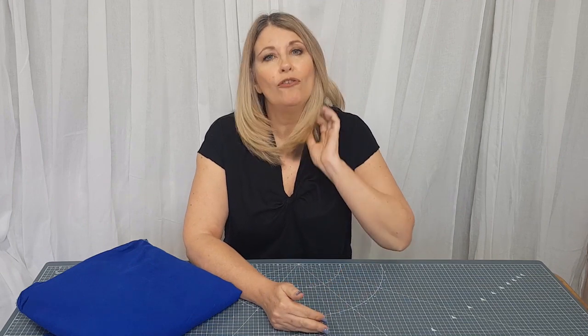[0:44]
Today I want to talk to you about making scrubs. At the moment there's lots of things we can do to help the NHS, but as sewers we can help by making scrubs. There are lots of Facebook groups out there that you can join to find out who your local coordinator is for your local hospital, and then you can find out what they need, or you can maybe ask for GP surgery.
I thought it'd be a nice idea, we're making for local midwives and GP surgeries, and I thought it'd be a good idea to run through the process and show you what we're doing, and give you some tips along the way. So the first thing you need to do is get your fabric, and you can use cotton or polycotton fabric. The main thing is that it can be washed at 60 degrees, a nice high temperature, and most of the colours that people are using are blue, but there are lots of other ones that you could use. So again, check with your coordinator to find out what they need.
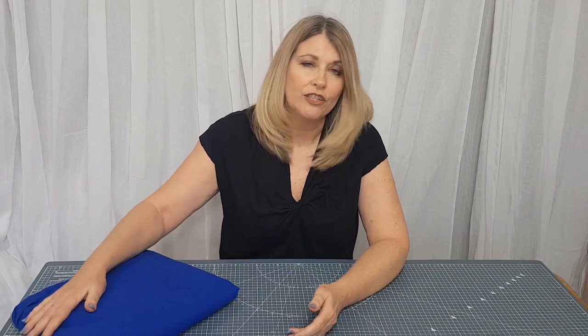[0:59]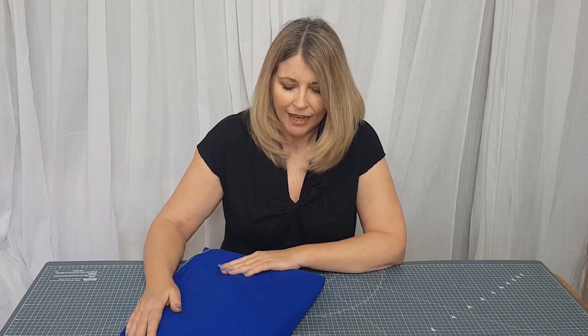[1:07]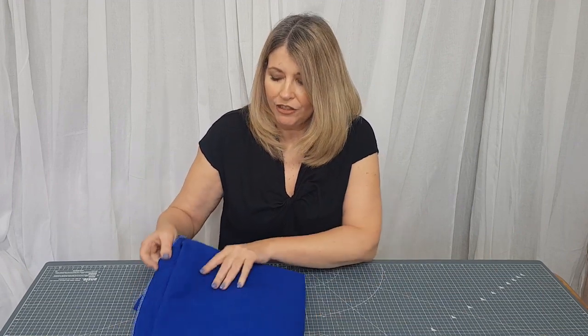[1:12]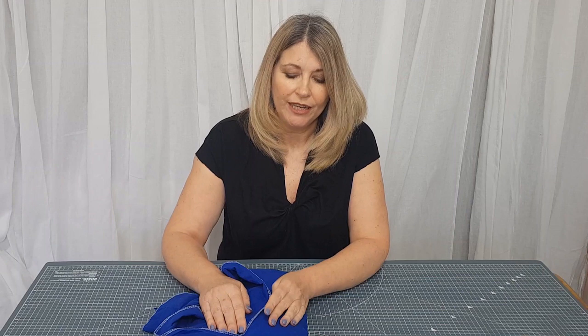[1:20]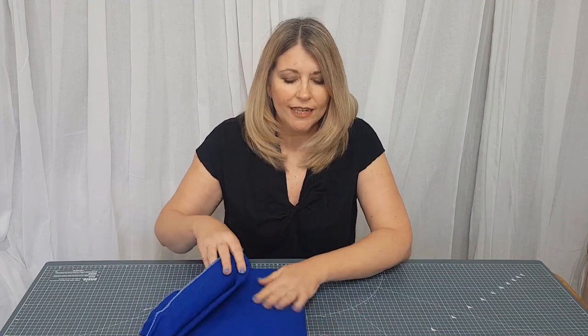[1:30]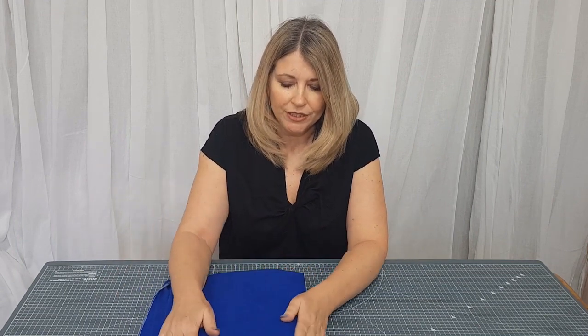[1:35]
This is a 100% cotton. When you get your fabric, wash it at 60 degrees and give it a press, and then it's ready to go. Before you wash it, a couple of things you can do. I like to overlock the raw edges. So it's generally about 3.5 metres of a 150 centimetre wide fabric that you need. So cut it into lengths, it makes it a bit more manageable. Overlock the raw edges, that will stop them coming all unravelled in the washing machine, and press out that centre crease if it's been folded in half, because that will stop it setting. And then you can wash your fabric and it's ready to use.
So that's the fabric. Patterns, there are lots of patterns available as well. You can download them, you can get printed copies. Again, the Facebook pages, a lot of them have got downloadable patterns. So grab yourself a pattern and some fabric and we'll get started.
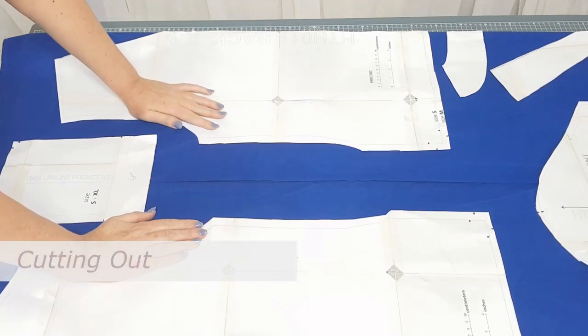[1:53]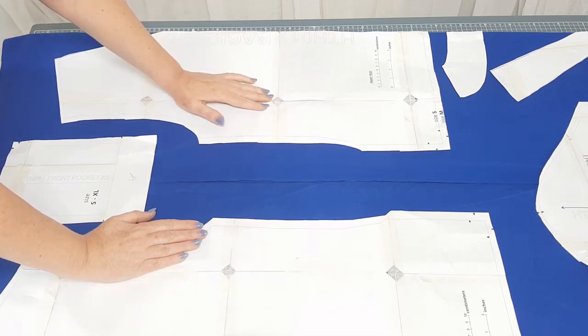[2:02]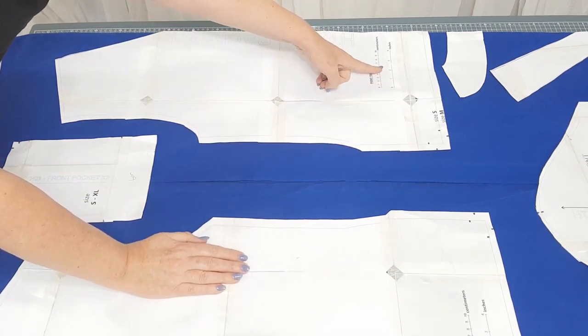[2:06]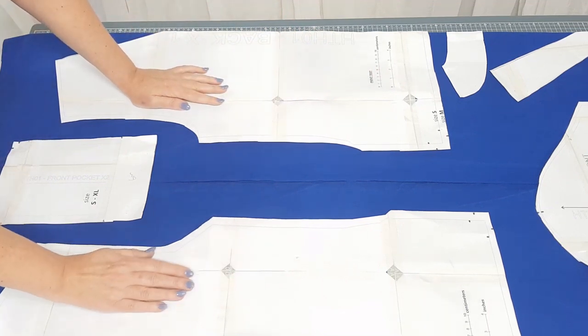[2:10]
So I've got my pattern and fabric prepared. This pattern is the print at home version, so you print it out on A4 and then stick it all together, so it's quite quick to do. If you're doing that at home, do check the scale to make sure you're printing out the right size to the right scale. A couple of things that I've already changed.
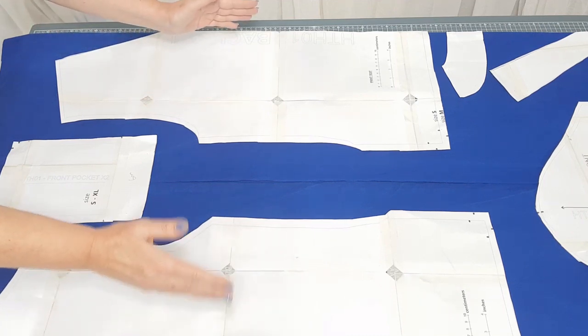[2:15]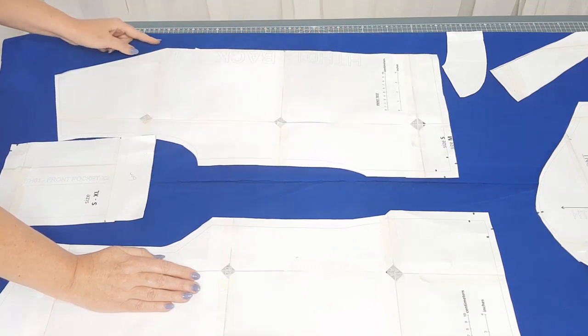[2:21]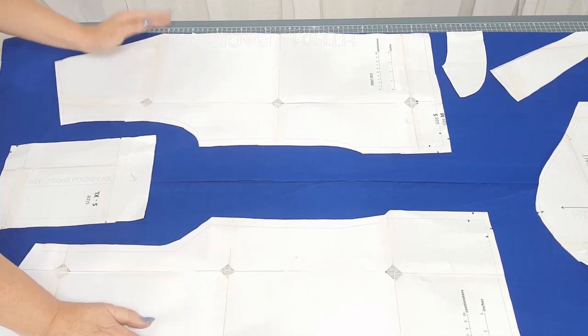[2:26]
When I printed this out, it printed the whole front and the whole back. So the front was one piece and the back was one piece. So I've cut those in half. So I've now got half of the front here. That means I can place this pattern piece to the fold of the fabric, and the same with the back. I can place them to the fold of the fabric.
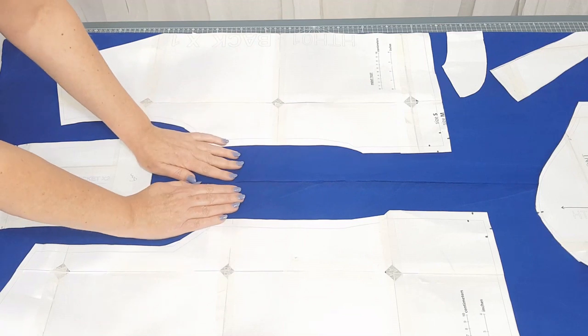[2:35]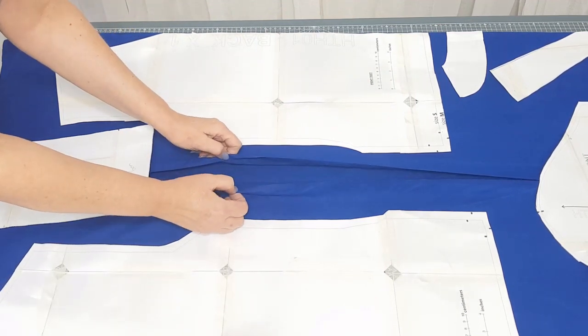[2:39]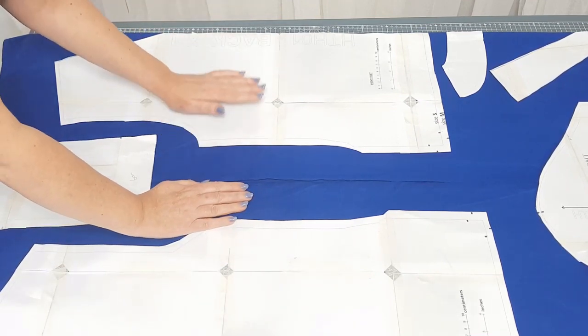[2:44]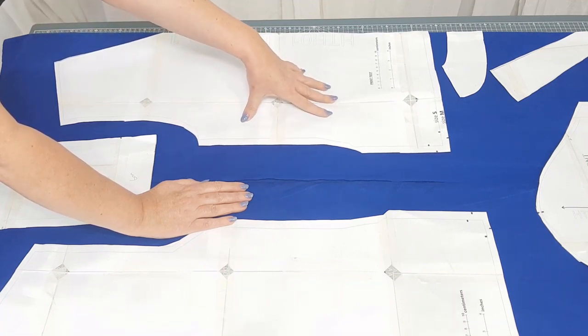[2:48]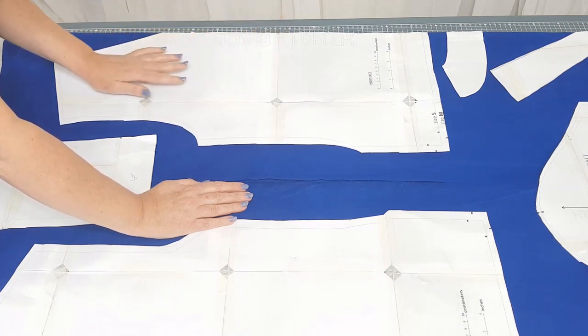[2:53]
And if you're doing a small, medium or large size, that generally means that you can fold the fabric into the middle and get both pieces next to each other. So I've got the selvages of the fabric here and the fabric folded into the middle. It also means that you could do more sizes, because you could have that, this is medium, this side, and the other half that I got I'll do as large. So it just gives you more options. I've also cut the front and back neck facings in half so they can go to the fold as well. I think it's a bit more economical on fabric if you have things placed to fold.
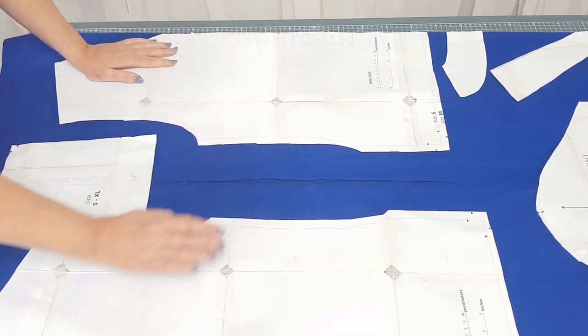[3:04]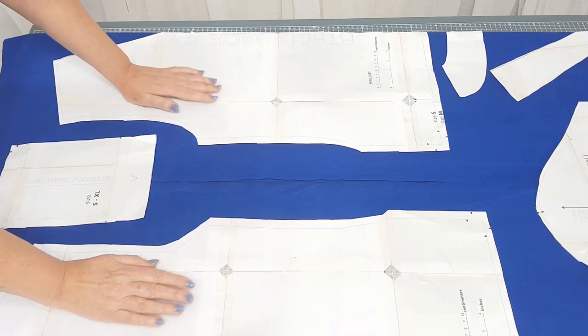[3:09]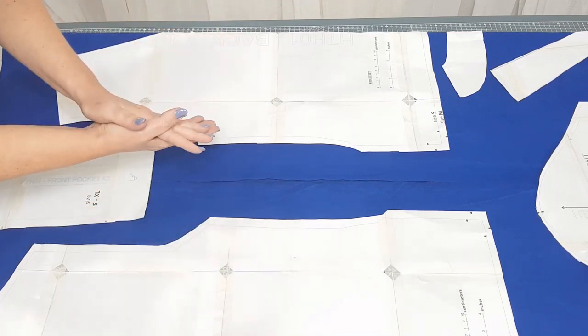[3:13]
If you're doing several pairs, you could think about cutting more than one at once, so layering up your fabric. I've managed to cut 3 pairs at once, so have a go at that if you're confident enough to do that. Do cut more than one pair, it's a little bit quicker as well.
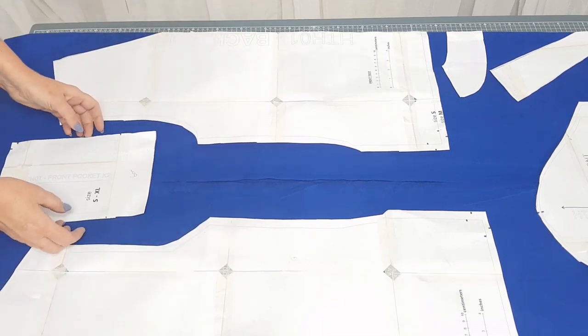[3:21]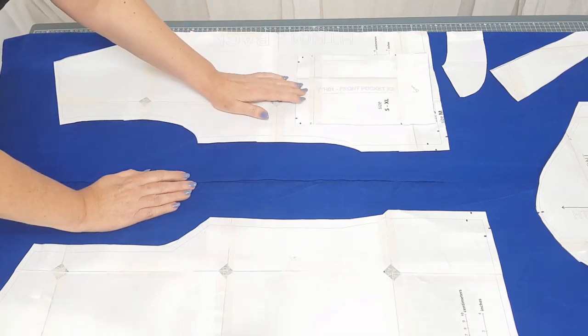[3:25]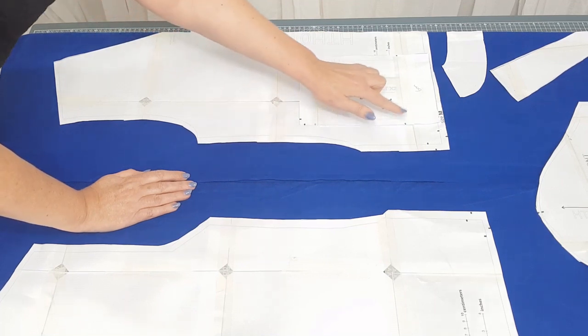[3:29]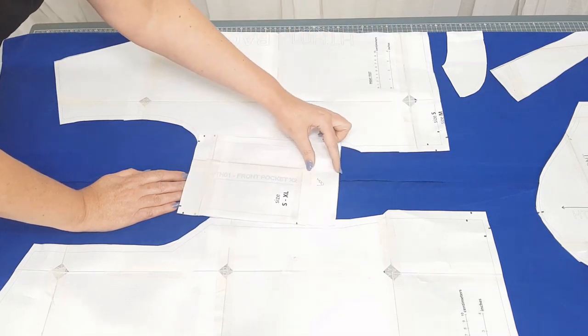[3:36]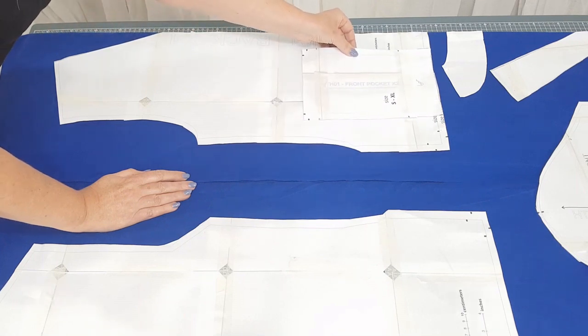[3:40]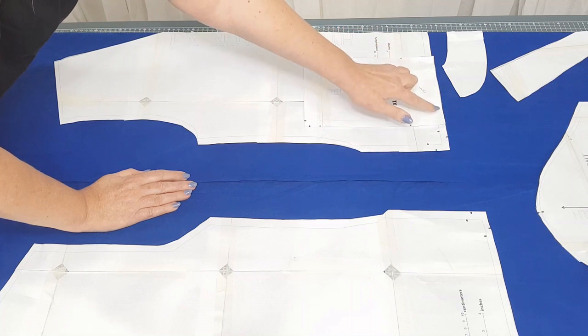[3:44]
Another thing that I have done, the front pocket piece, the front pocket is a patch pocket, and you're supposed to stitch it on around 3 sides. But what I've done is I've lengthened this by 6 centimetres. So I've put an extra 6 centimetres on the bottom here, so that when I place the pattern on, place the fabric on, the bottom of the pocket will be neatened with the bottom of the top, a tunic. So I will show you that when we come to the construction.
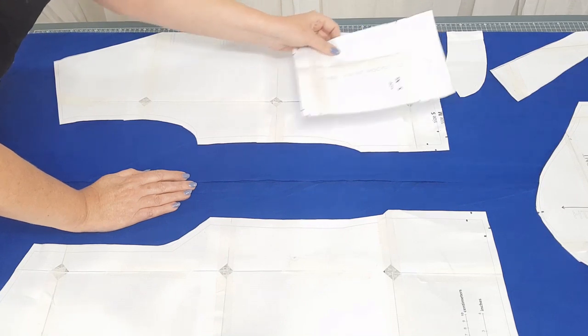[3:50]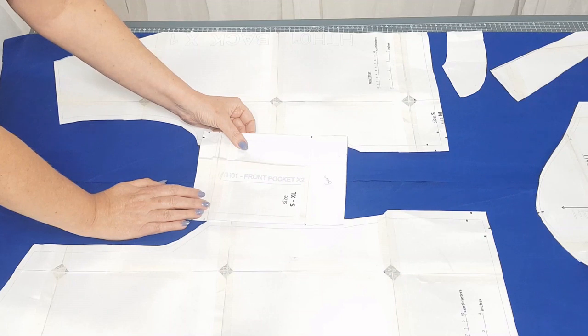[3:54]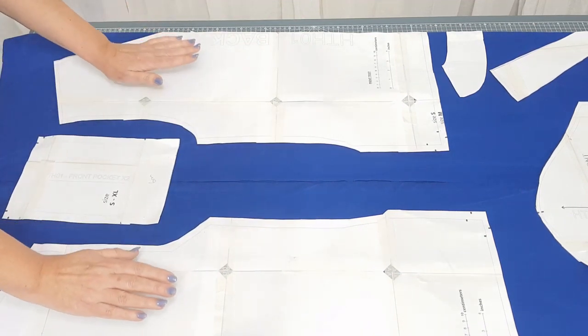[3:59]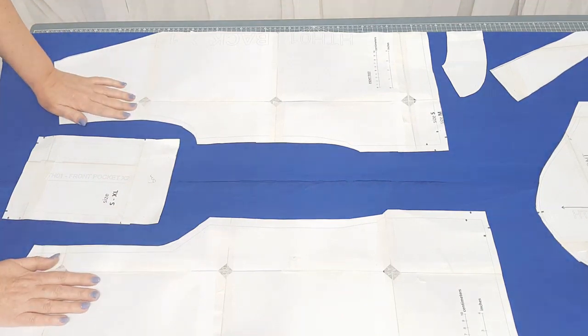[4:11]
I'll show you that, but add an extra 6 centimetres onto the bottom of your pocket piece, and that should save a bit of time later on. So I've got my pattern pieces on the fabric here, and the front and back facing, and then I'll do the sleeve after I've cut these bits out. So that's the next thing to do, will be to cut out all your pieces and then come back to me. I'll show you the next step.
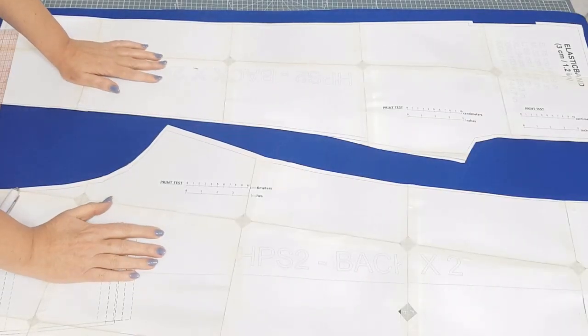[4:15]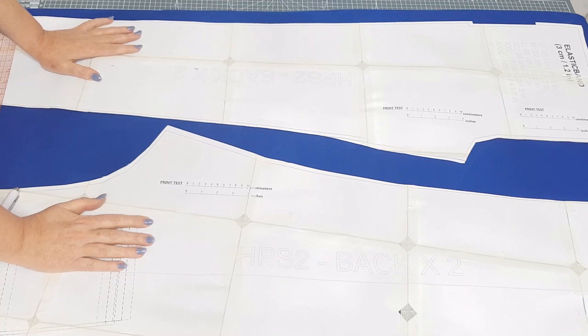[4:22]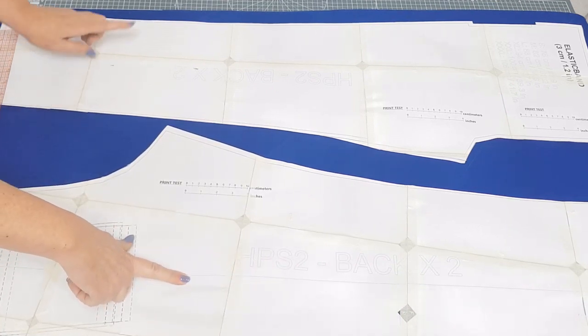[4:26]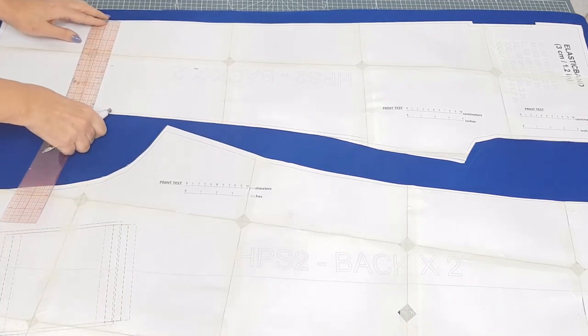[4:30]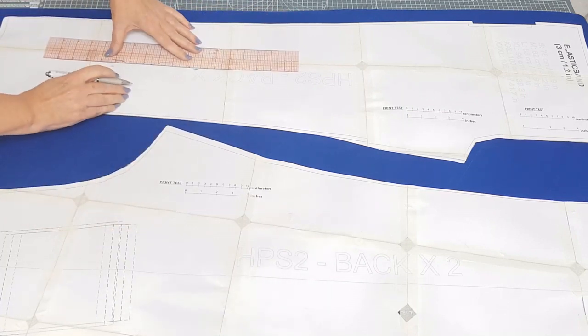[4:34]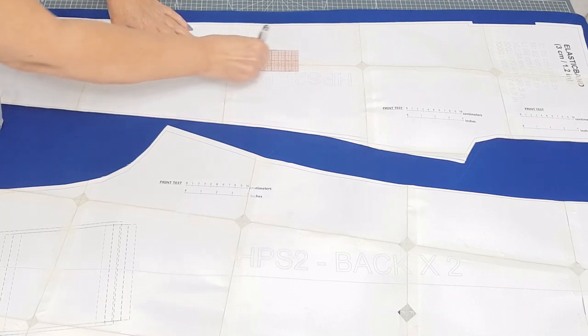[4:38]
Okay, so I thought I'd show you the cutting out of the trousers at this point as well. So here's my trouser pattern. Again, it was the download pattern that I've stuck together. A couple of things to say about this. There's a grain line on the front here, but there's no grain line on the back. So I've just marked the centre of the leg in 2 places and then drawn my grain line here. So this will be my grain line here.
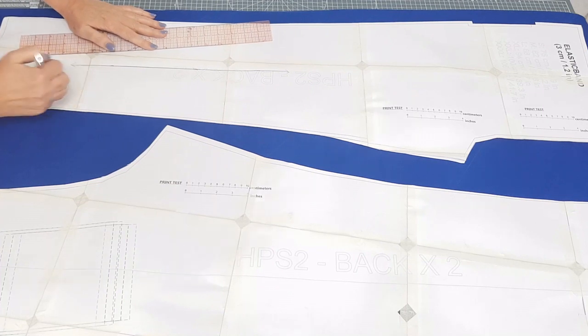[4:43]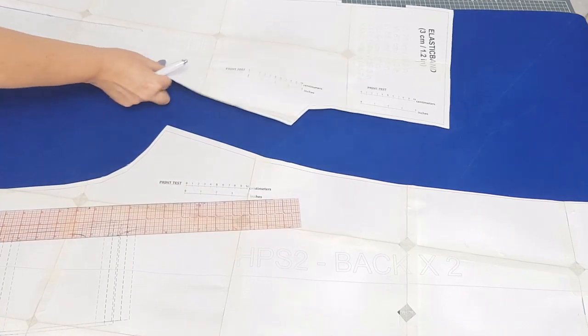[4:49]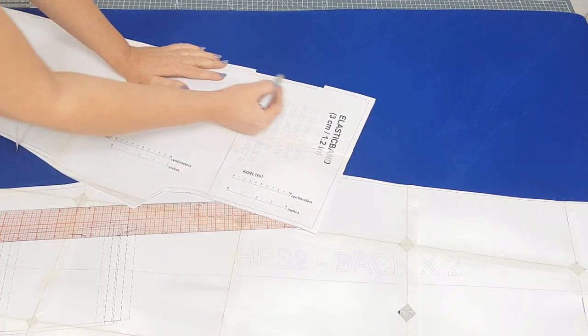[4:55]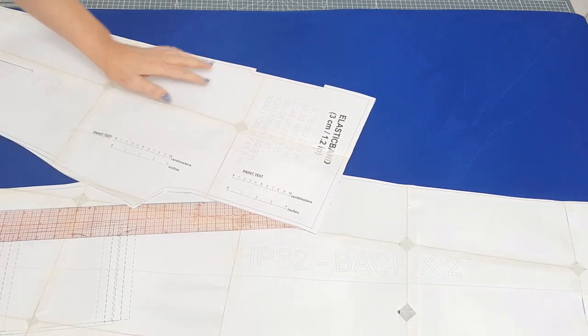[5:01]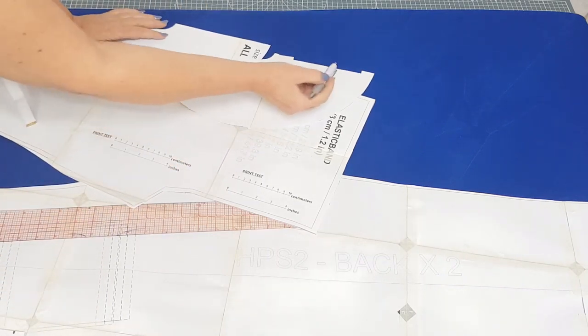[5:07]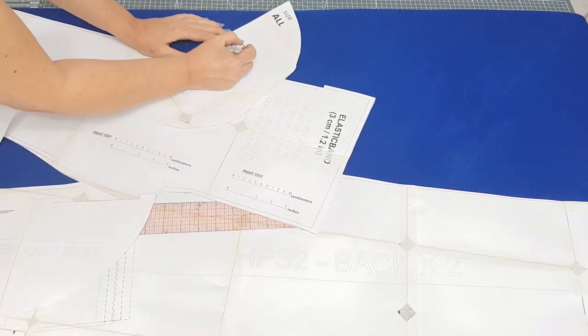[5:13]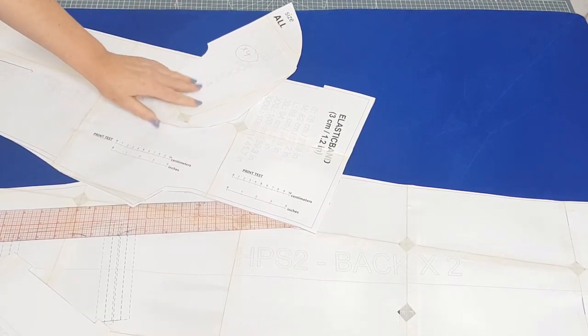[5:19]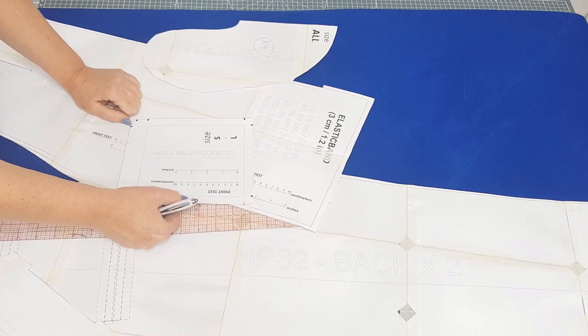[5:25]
Okay, the other thing is with this one, I'm just going to pull this forward so I can point it out. There's a little cutout here. I would ignore this. It's a nice pocket, but for speed wise it's a bit more fiddly, so I would just cut this straight out here. And you'll also see this particular pattern has both pocket pieces, one of them's got a cutout and one of them hasn't. Don't use this one. Just cut out 4 of this one. Okay, so ignore that one and just cut 4 of this one. So you can do inseam pockets with that piece, and then we've also got a patch pocket to go on the back as well.
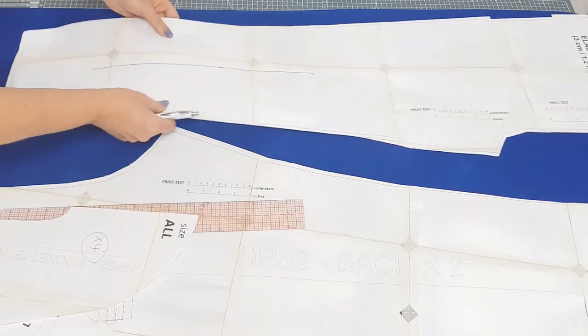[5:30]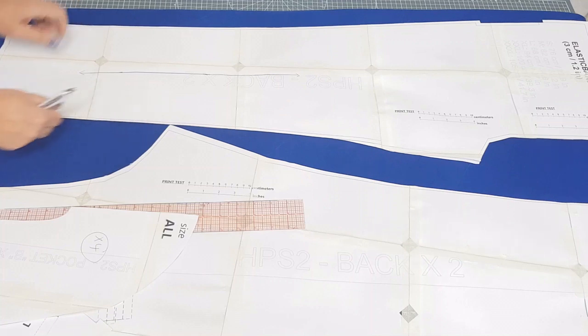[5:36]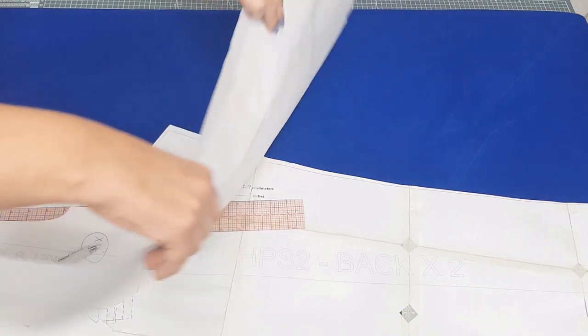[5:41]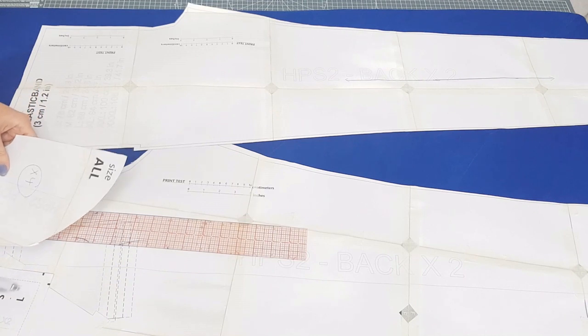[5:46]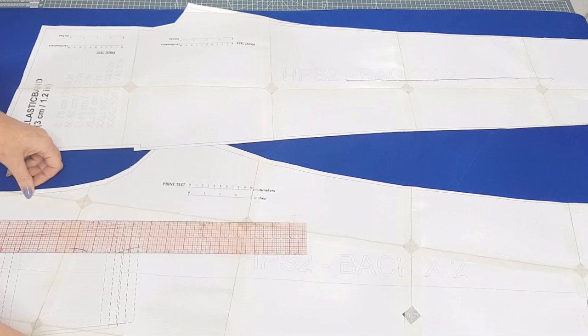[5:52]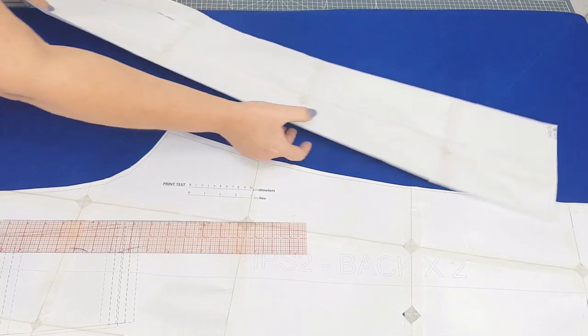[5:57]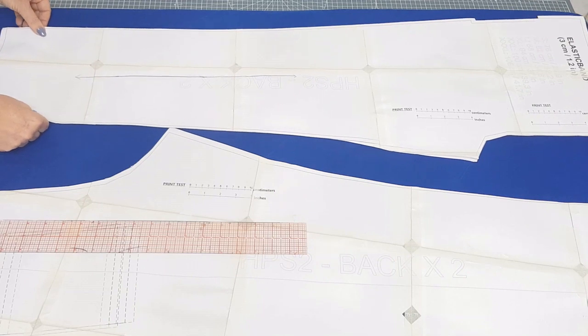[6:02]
So I've placed my pattern piece on the fabric like this. This is the best use of the fabric. Now, generally, when I'm teaching dressmaking, I would say to have your pattern pieces directional, which would mean you would have both of them this way round. But you can see straight away that that's not the most economic use of the fabric. And because we're making uniforms, but also we're using a fabric that has no direction to it, I think in this case we can forego that, one of my very important dressmaking rules, and turn the pattern round and have it like that, just to be more economical with the fabric.
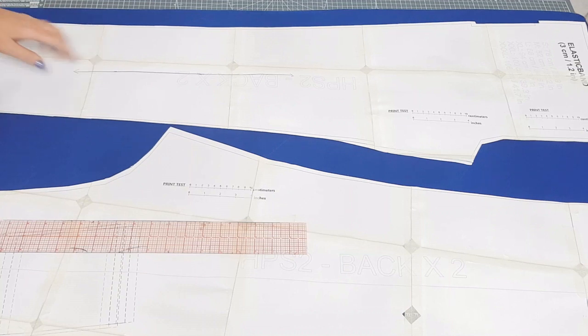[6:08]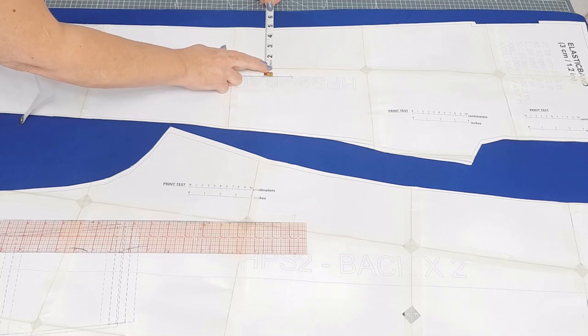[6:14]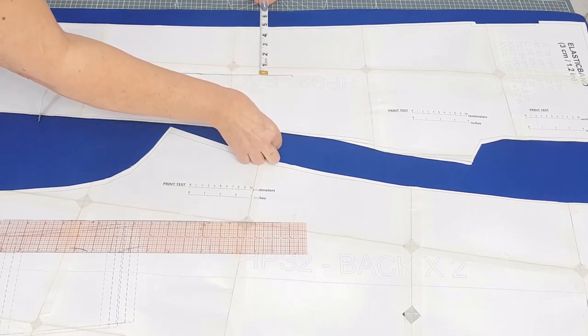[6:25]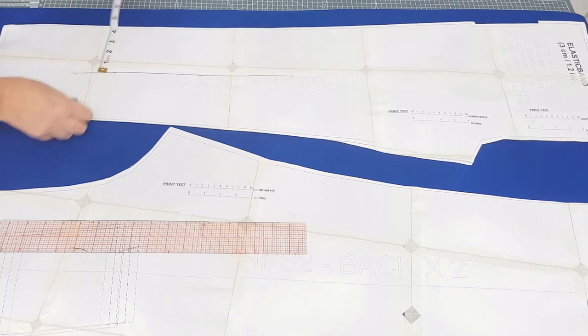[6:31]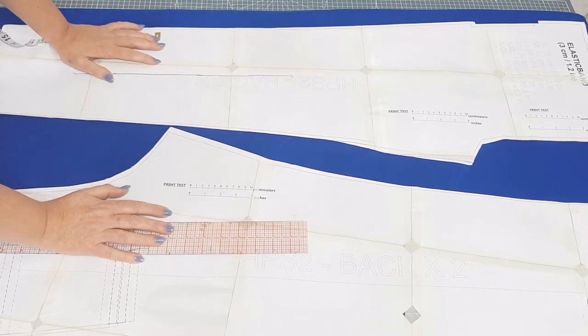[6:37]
So you can pin your pattern pieces on, making sure that the grain line is parallel to the edge of the fabric, either the fold or the selvage. This time the fabric's folded in half rather than to the middle. So check that the pattern piece is exactly parallel to the edge. We don't want our trousers twisting, so make sure they're straight, and then pin your pattern pieces on and cut those out as well. Just a quick mention that the patterns that I'm using are unisex patterns, so they tend to be quite long, so you may want to check the leg length on them as well. So that's it. Cut out your trousers as well, then we'll come back and start the construction on the top first of all.
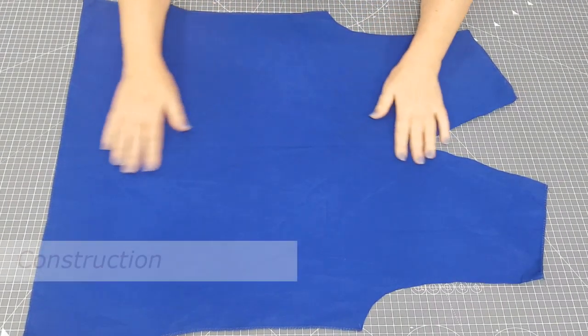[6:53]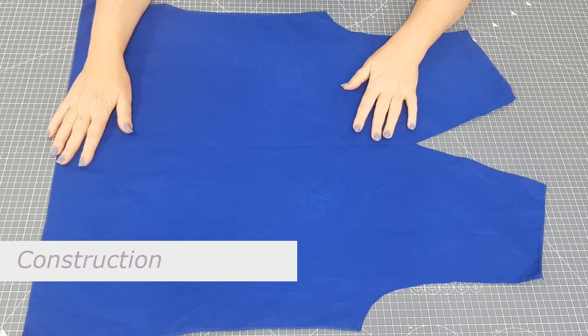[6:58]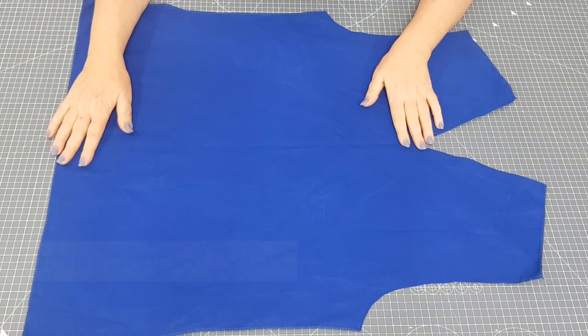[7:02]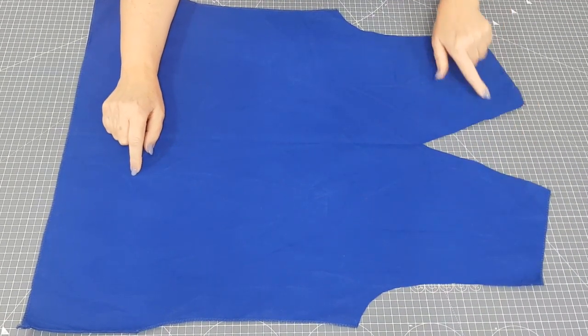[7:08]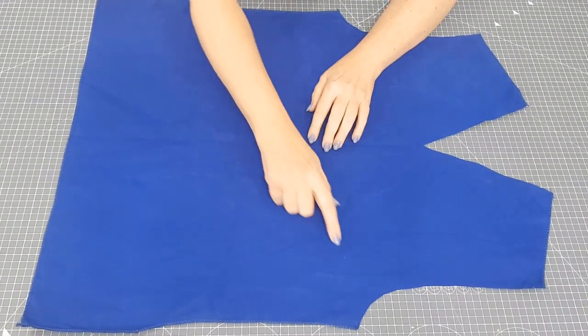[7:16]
So once you're all cut out, the next part of the construction is to overlock some of the edges, or neaten some of the edges. If you haven't got an overlocker, you can zigzag them. And to start off with, I'm going to go through each piece and tell you where you need to overlock. So I would neaten the top shoulder pieces here, and then down the sides and across the bottom on each piece. If you want to, you can just go down each side and come off and start again.
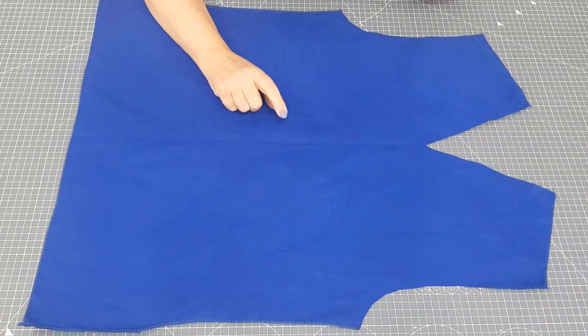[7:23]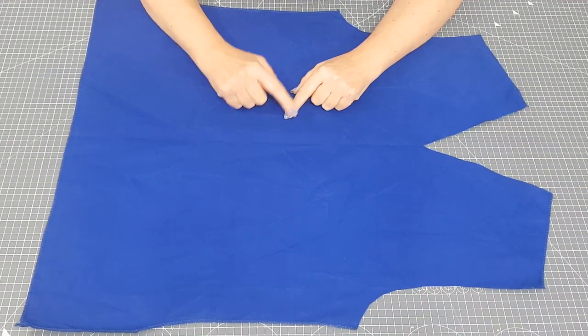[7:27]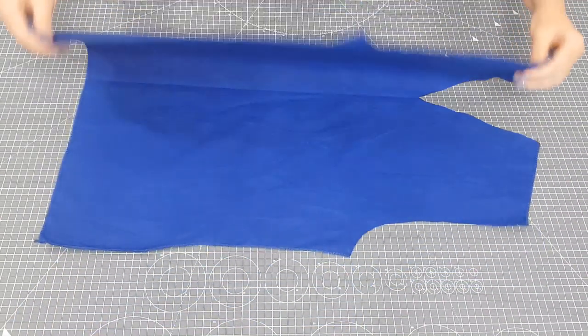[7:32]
If you'd like to learn how to turn corners with an overlocker, there's a video for doing that, for turning curves and corners, on my YouTube channel, and you can just click the link in the top corner and that will show you how to do that. So that's the front. On the back, let me show you the back.
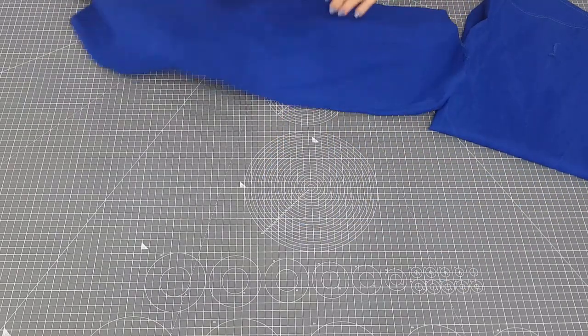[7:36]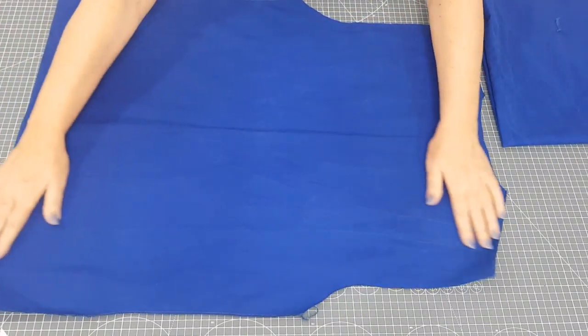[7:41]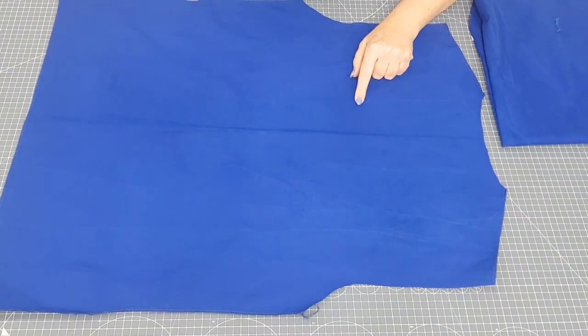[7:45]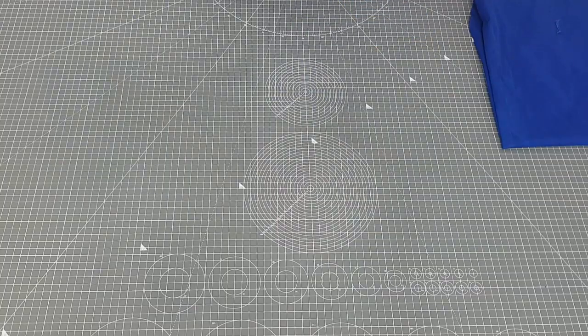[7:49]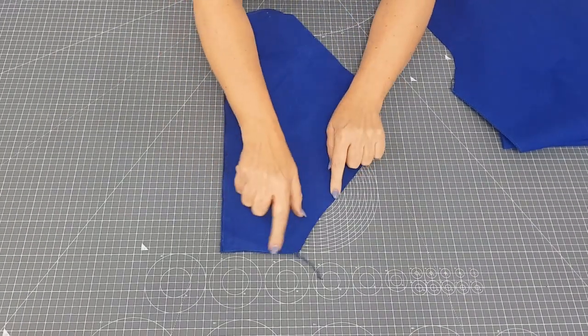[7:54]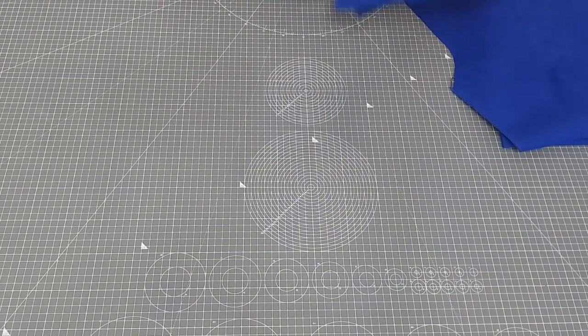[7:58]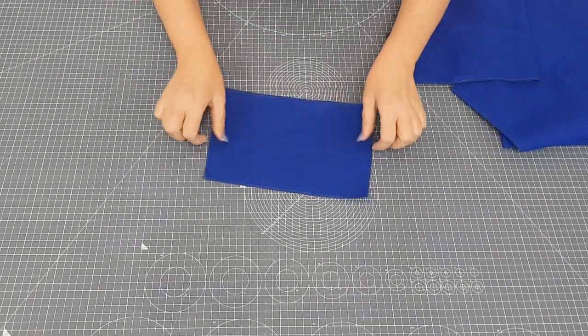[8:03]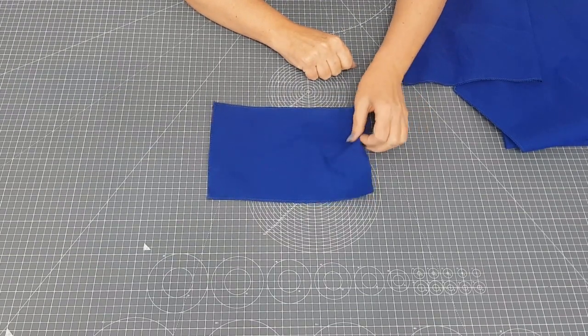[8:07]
Here's the back, and again I've done the shoulders here and then down each side and across the bottom. That's the back. The sleeve, down the sides and across the bottom, there. And your pocket, you'll have 2 pocket pieces, go round all 4 sides for that piece.
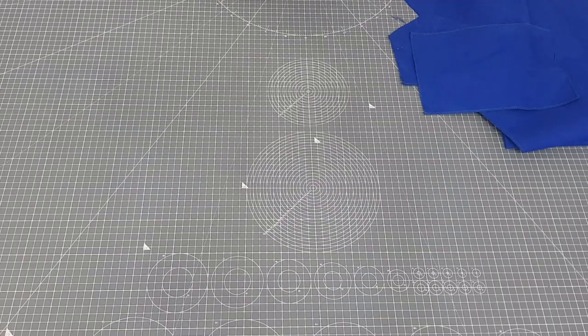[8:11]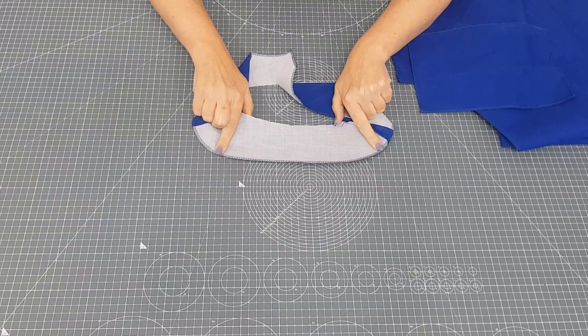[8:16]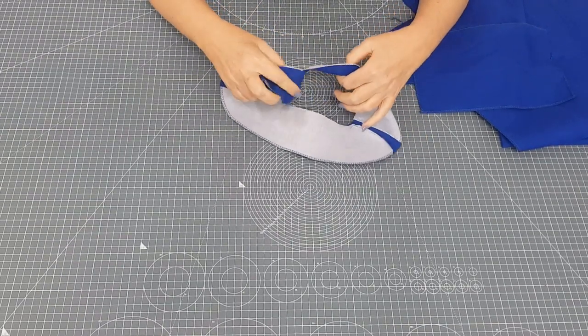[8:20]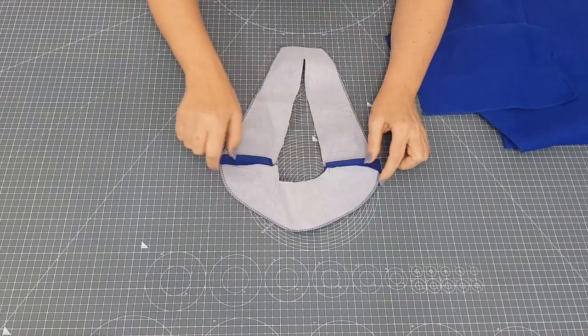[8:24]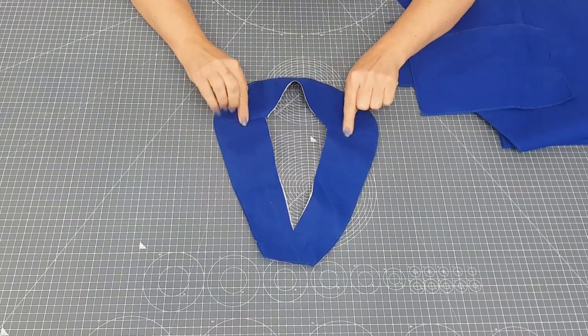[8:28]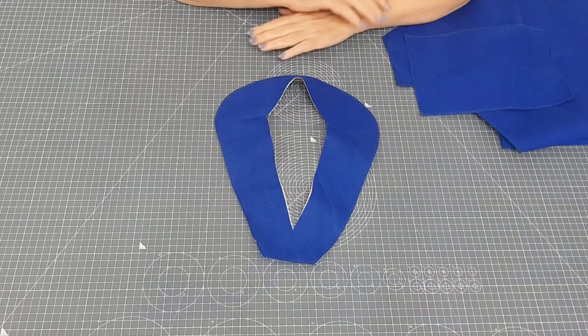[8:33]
And then lastly, the facings. Now the facings, the front and back facing will need to have interfacing on it. This is a fusible interfacing I've just ironed on. So that's the front facing and the back facing. And then I've joined them together at the shoulder seams and overlocked around the edge. So that's the wrong side and that's the right side. So fuse the interfacing on, join the shoulder seams and then overlock around the edge.
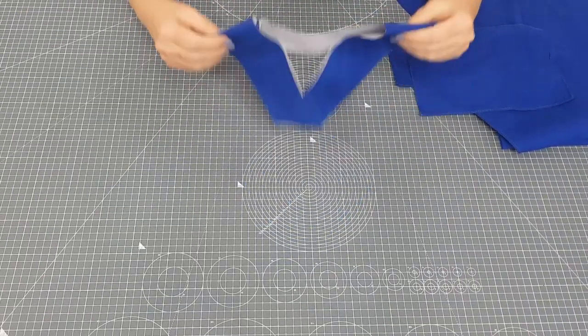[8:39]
So that's the next steps that you need to get on with, and then come back to me and I'll take you to the next step.
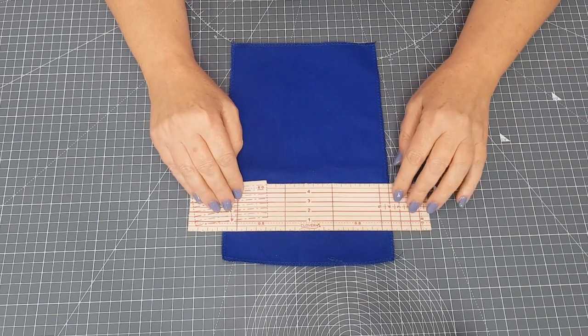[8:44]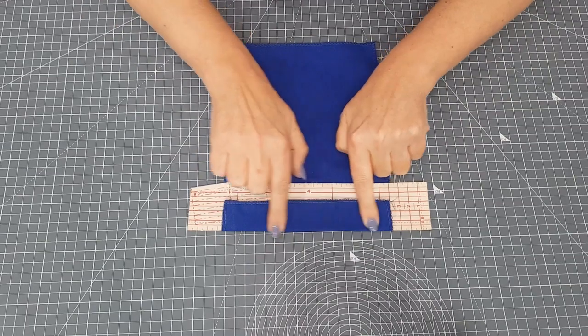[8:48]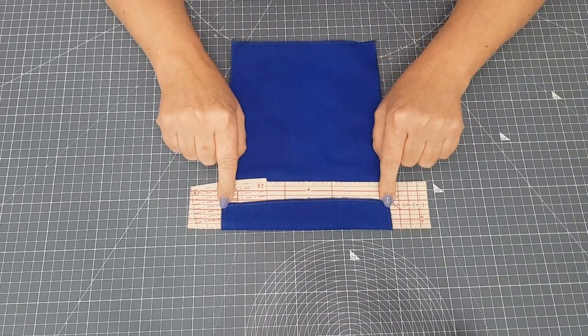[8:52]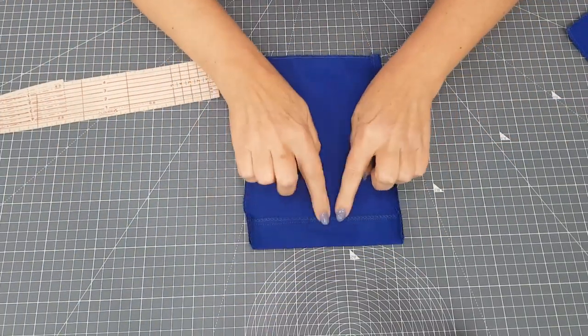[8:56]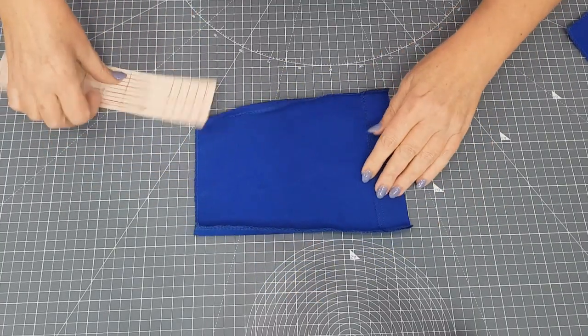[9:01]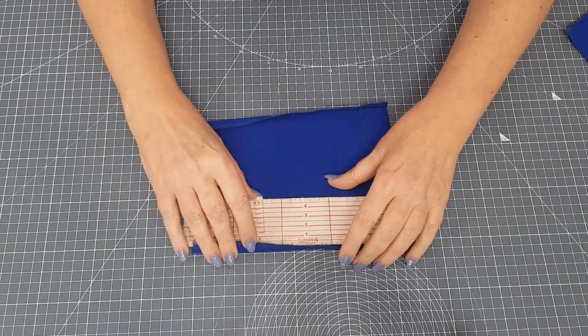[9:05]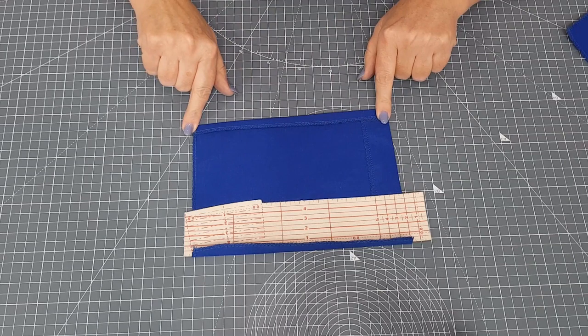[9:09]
We're going to start with the pockets. So the first thing you need to do is turn over the top edge by 3 centimetres, give it a press, and then you're going to stitch along here. Once you've done that, so this one is stitched across the top here, you're then going to turn under each of the long edges by 1 centimetre. Like that. So both long edges will be by 1 centimetre, and press those.
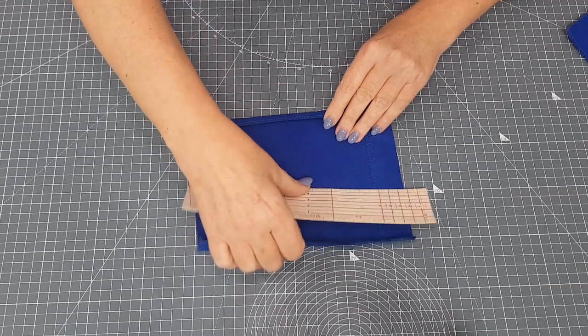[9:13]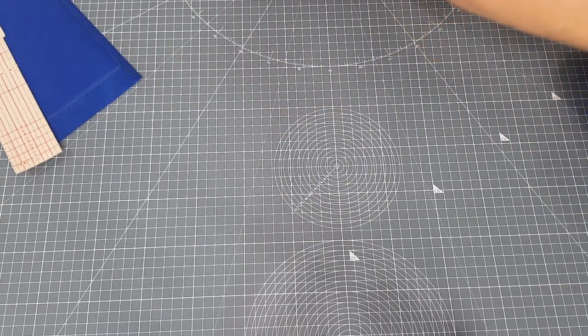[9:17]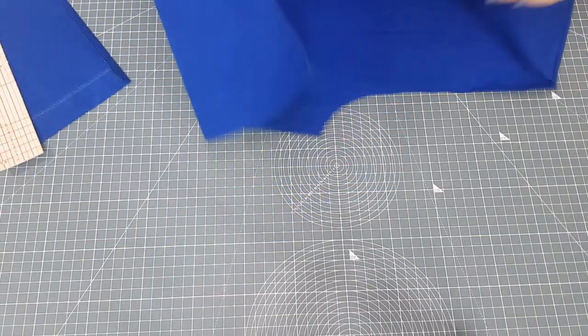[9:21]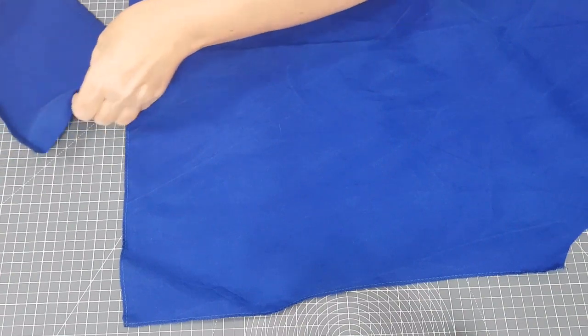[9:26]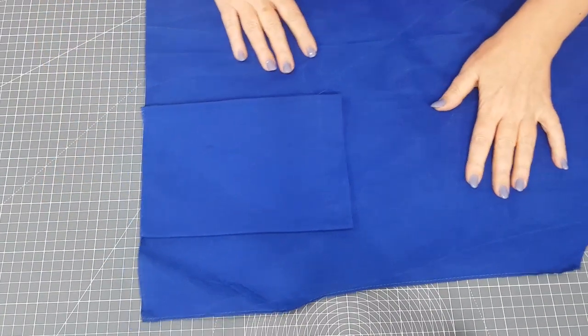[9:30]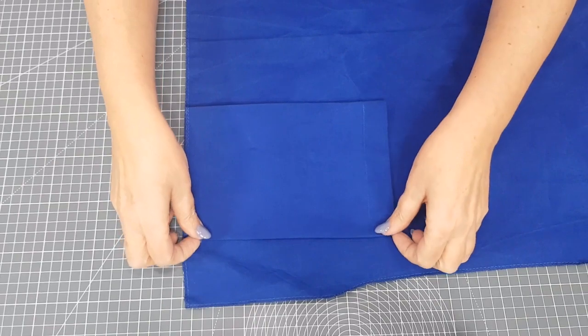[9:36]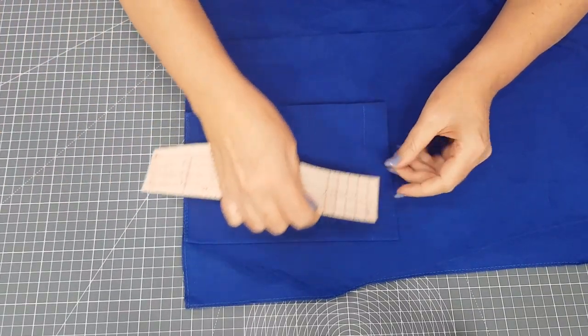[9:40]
What we're going to do next is put them onto the top of your scrubs. Let me just grab that piece here. And 1 pocket on each side. So the bottom of the pocket, like I mentioned, is lined up with the bottom of the scrubs here. That will get neatened with the hem. And then the side here needs to be 3 centimetres in.
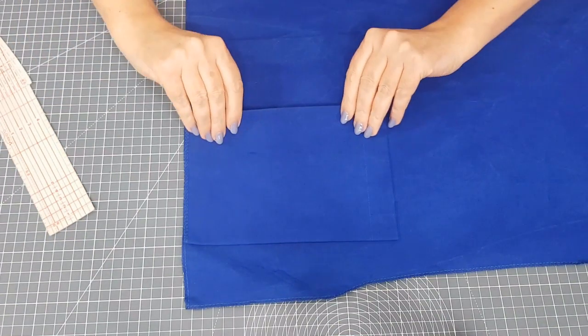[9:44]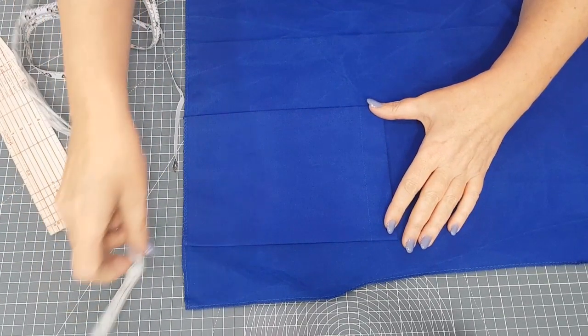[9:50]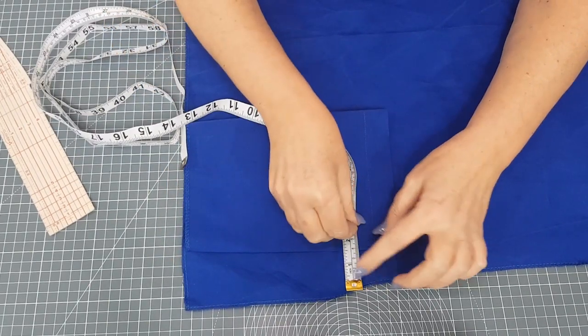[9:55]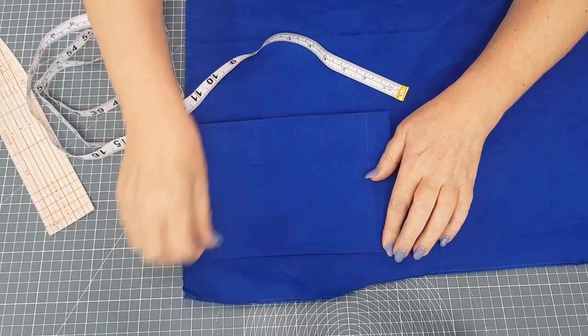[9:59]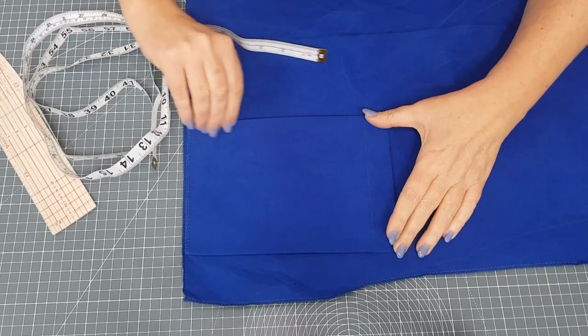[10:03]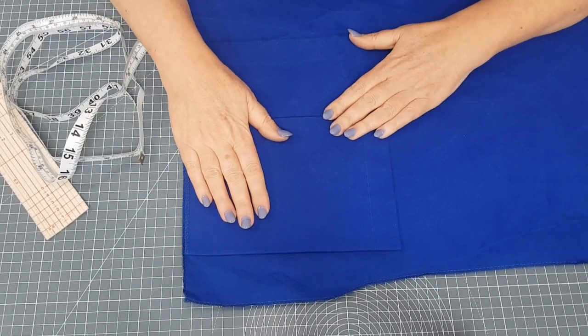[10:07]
Get my tape measure. And I shall measure that. So the side of the pocket needs to be 3 centimetres in from the edge. There. Like that. And then you're going to stitch down each side. So that's the next thing to do, is to get your pockets all prepared and then pin and stitch them to the front of your scrubs top.
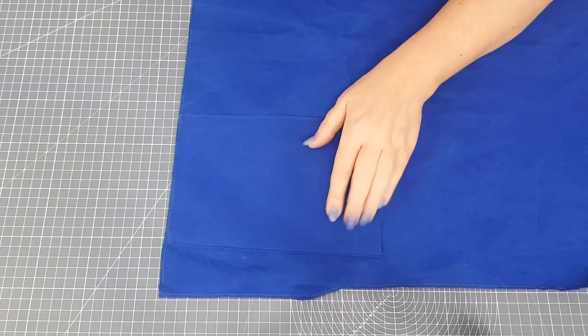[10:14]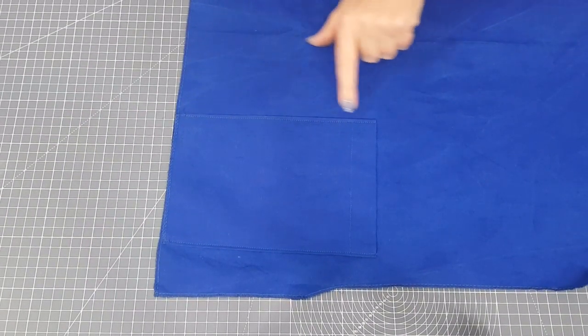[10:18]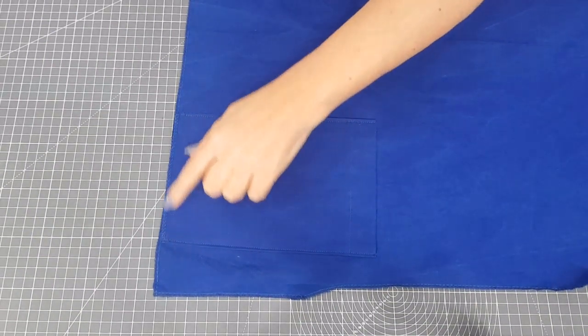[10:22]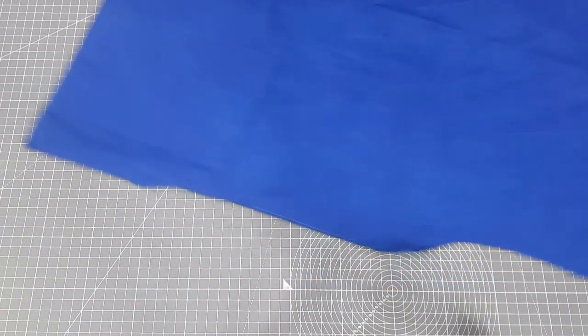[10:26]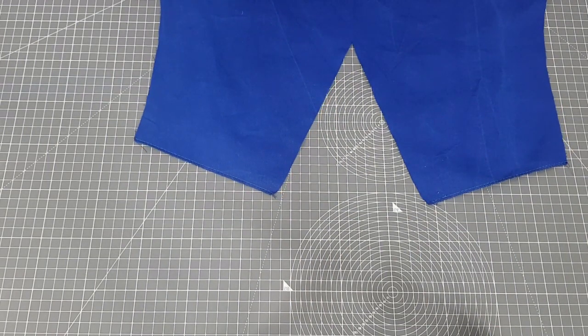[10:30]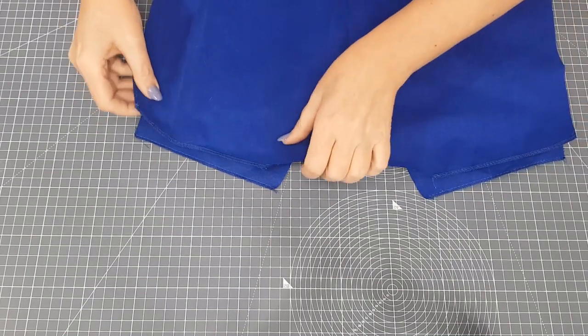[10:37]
I've stitched the pockets on now, so I've done that quite close to the edge there, so that's nice and secure, and done a couple of reverse stitches at the top as well. I haven't gone across the bottom because that's going to be in with the hem. So once your pockets are on and you're happy with those, we're now going to do the shoulder seams. So we're going to get the front and back right sides together at the shoulders and pin those in place.
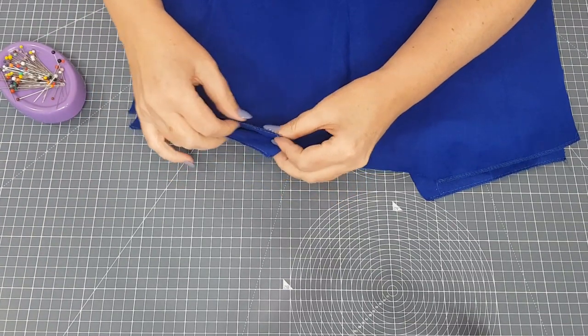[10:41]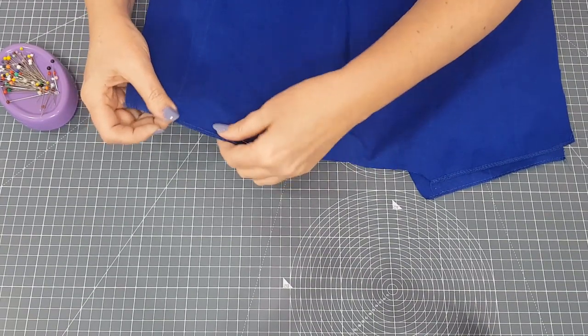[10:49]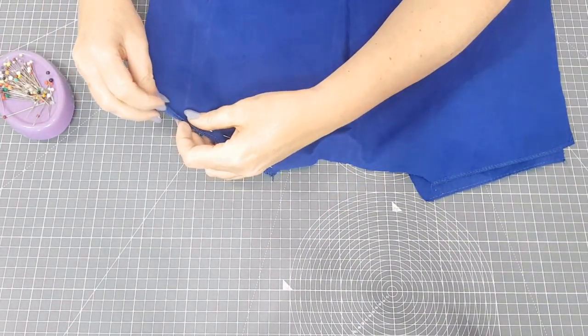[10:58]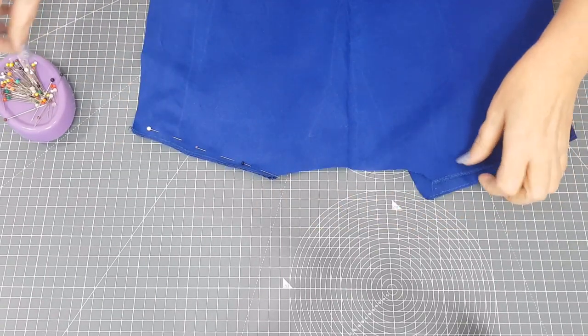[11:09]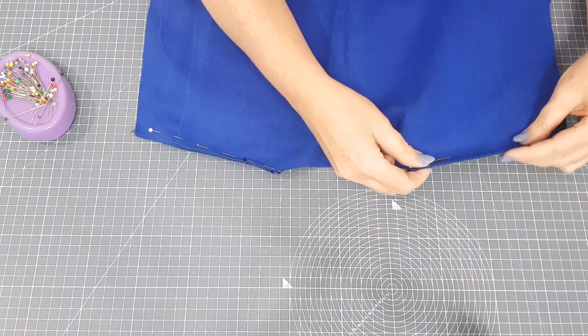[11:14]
The seam allowance on this pattern is 1 centimetre, but do check the seam allowance for the pattern that you're using. And I know we have a lot of discussion about which way to pin in the sewing room. I like to use my pins like a tacking, so they are parallel to the edge and roughly where I'm going to be stitching. And when you're pinning, if you have your edges away from you when you're putting your pins in, then they'll always be in the right direction to take out when you come to the sewing machine. So we're going to pin and stitch our shoulder seams, and once they are stitched, you're then going to press those open. So that's the next step for you to do.
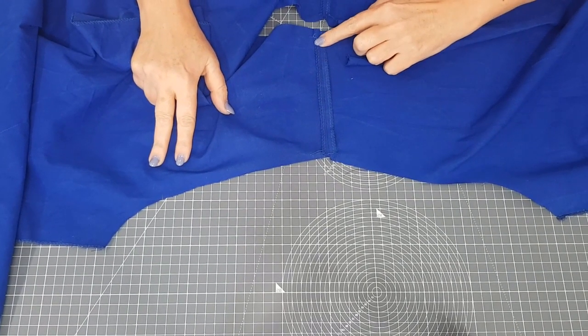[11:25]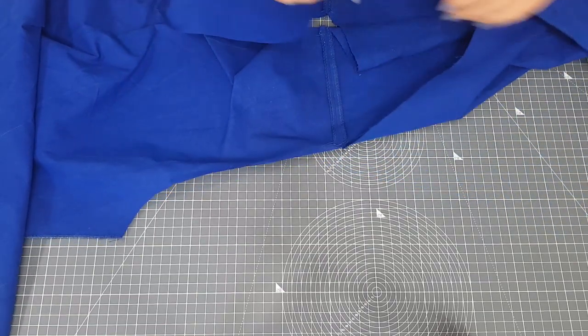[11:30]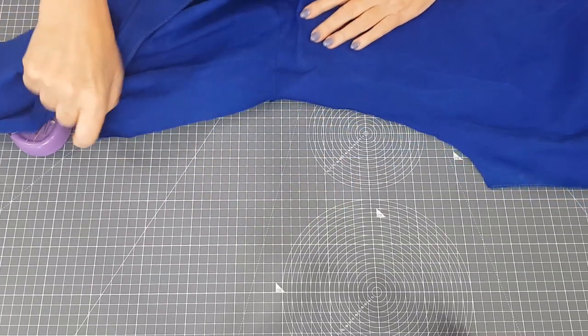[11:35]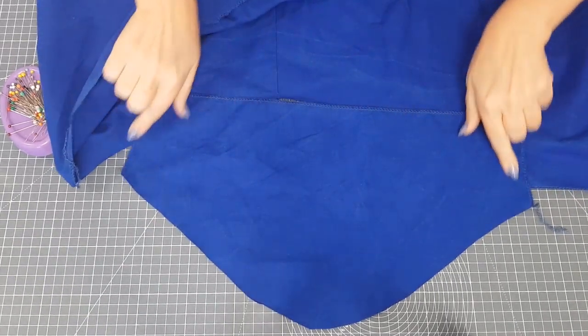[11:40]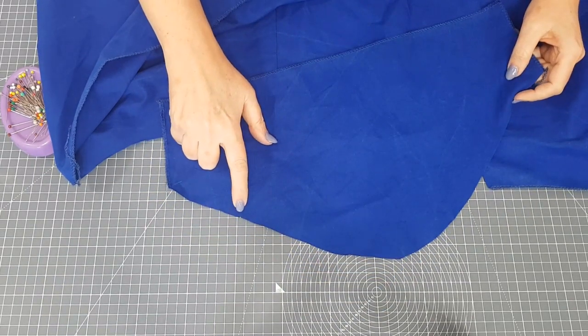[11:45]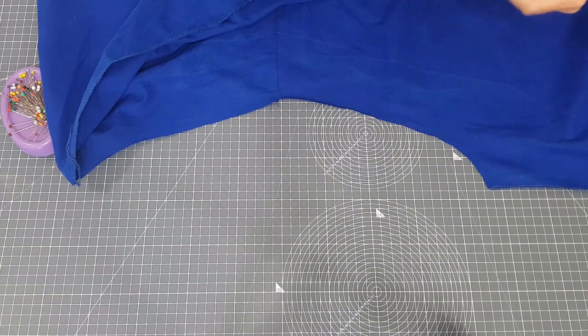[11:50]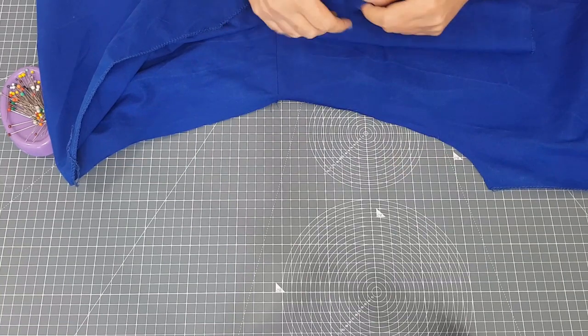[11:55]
Okay, the shoulder seams are stitched and I've pressed them open, and now we're going to put the sleeves in flat. So I'm going to turn this, shall I do the sleeve underneath? Do this way round. The sleeve on top. So I've got the sleeve here, and like I said, we've overlocked the sides and the bottom, and this pattern has got 1 notch here, and that 1 notch means that's for the front, and I've got a notch here for the front, and there's also a notch at the top of the sleeve, and that notch should meet your shoulder seam. So I'm going to match that one first,
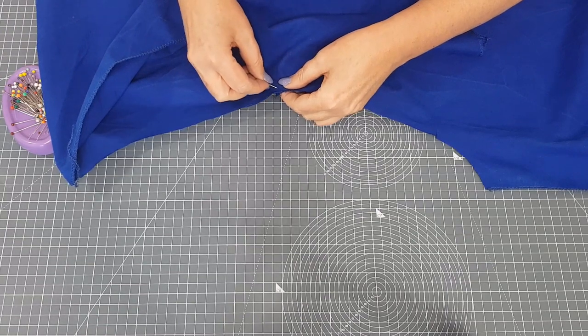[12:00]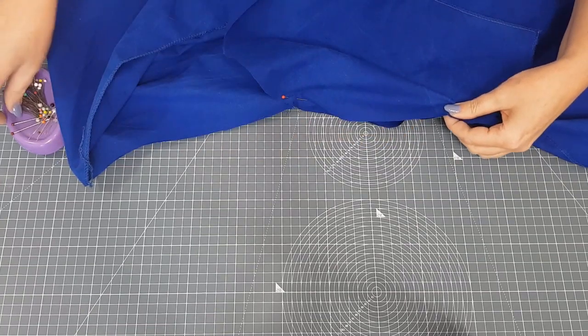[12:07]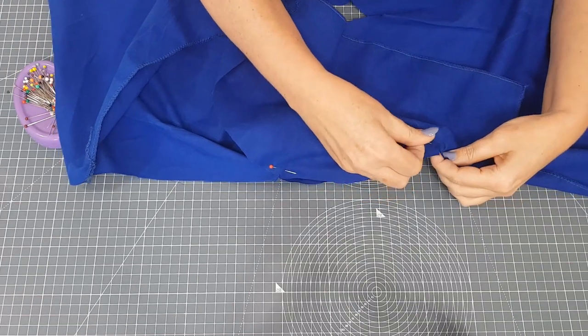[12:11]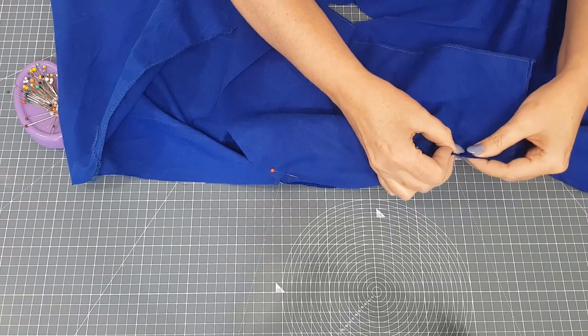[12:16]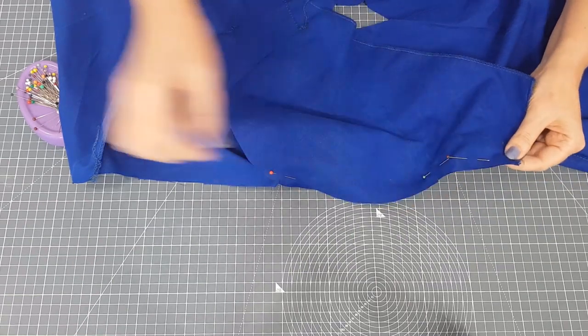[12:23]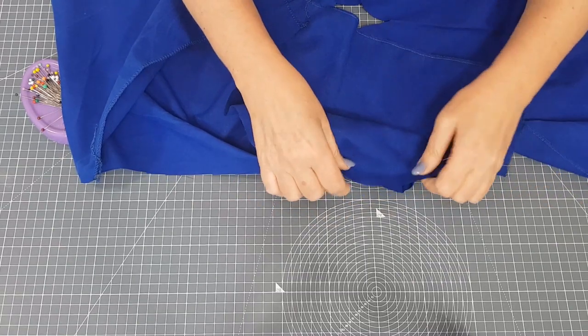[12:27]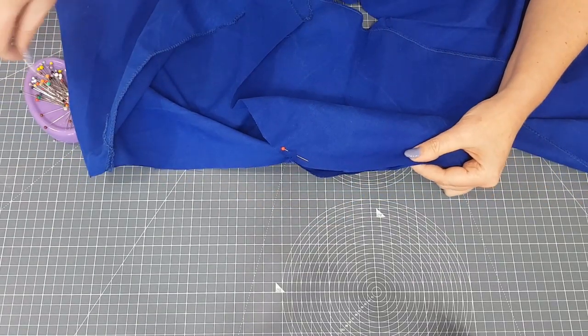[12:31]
and match the notch for the front, and then pin this all around. And we didn't neaten this edge because I thought it would be easier to stitch this seam and then neaten the edges together for this one. So we're going to pin the sleeve in. It should fit in quite easily, it's just a flat sleeve. So just pin it in,
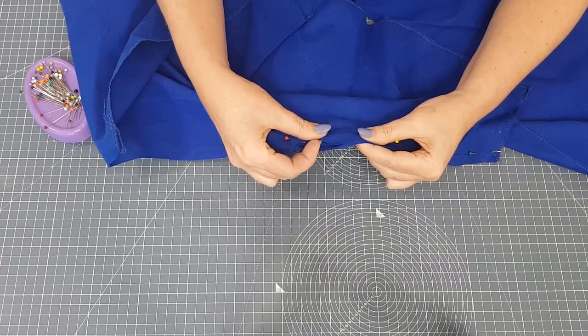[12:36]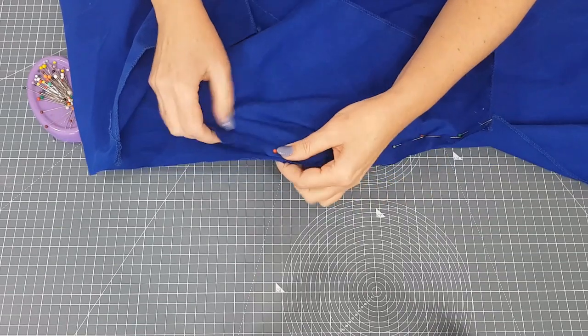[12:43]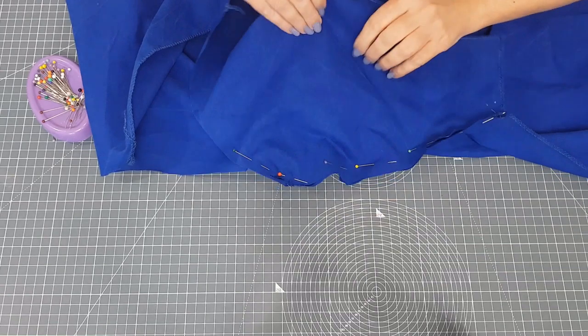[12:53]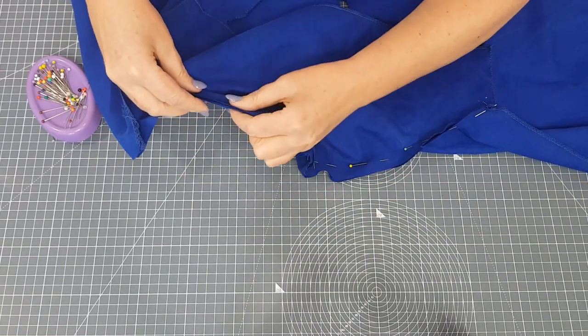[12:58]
and then we're going to stitch this with the same seam allowance you've been using everywhere else. And then I'm going to overlock these 2 edges together. And then I'm going to press the seam, and the seam will get pressed towards the sleeve, so down the arm. So that's the next bit to do, is to pin and stitch your sleeves in, neaten them with the overlocker or a zigzag, whatever you're going to be using, and then press the seam towards the sleeve.
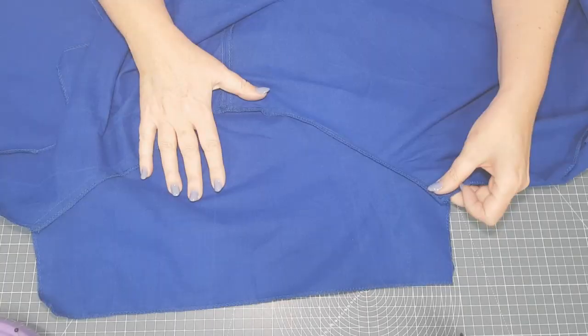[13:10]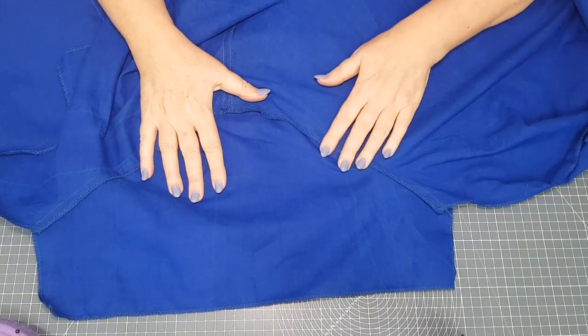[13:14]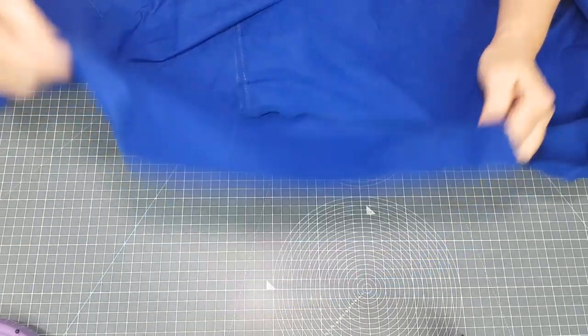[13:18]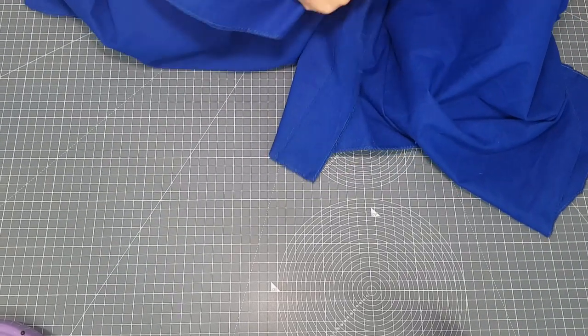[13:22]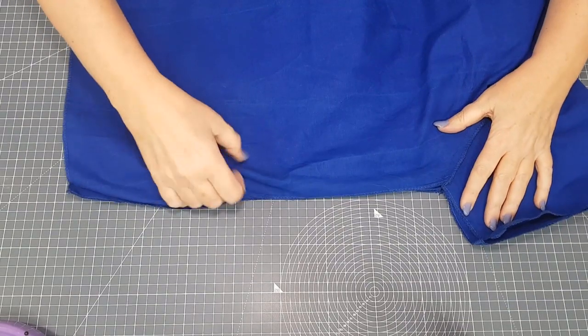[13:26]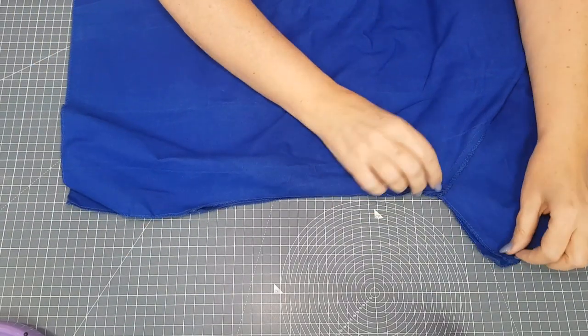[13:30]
The sleeves are sewn in now, and I've pressed the seams towards the sleeve. That's this way, towards the sleeve. So now we can do our side seams. Bring your front and back together, and we're going to stitch down the sleeve and then down the side.
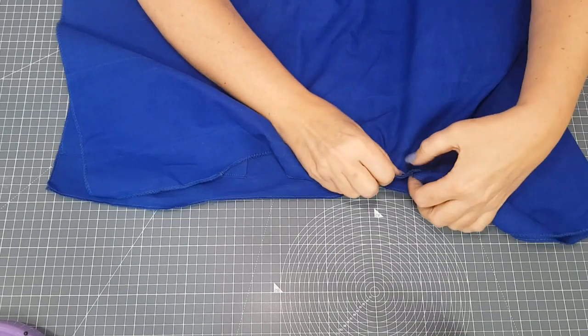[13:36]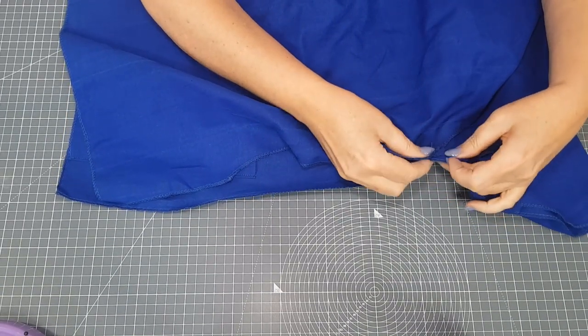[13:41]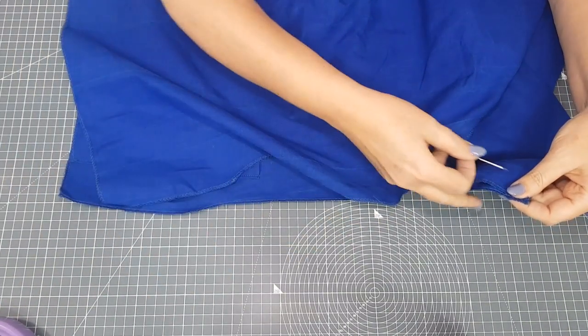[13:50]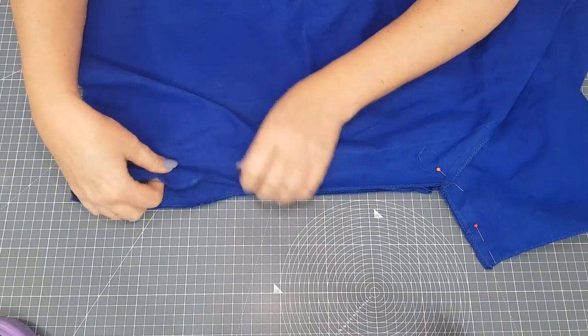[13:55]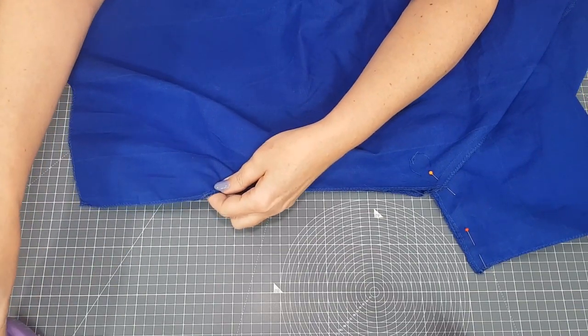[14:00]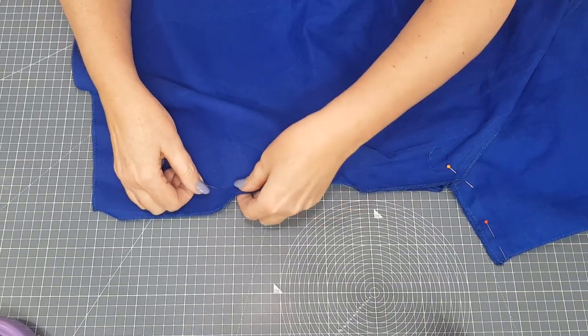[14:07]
Make sure your seams match at the underarm here. That's quite important, just for neatness. And pin from the edge of your sleeve down to the top of the split. On the pattern that I've got here, there's no real measurement for this, so I'm going to say in line with where the fabric comes out there, we're going to stitch down level with that. Does that make sense?
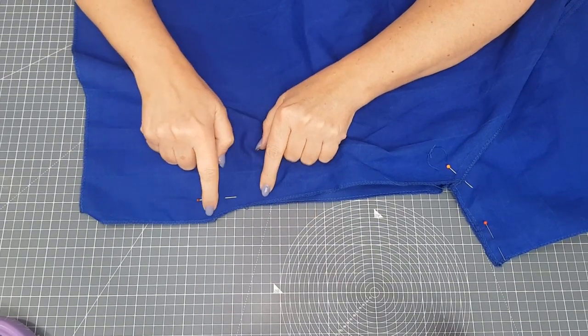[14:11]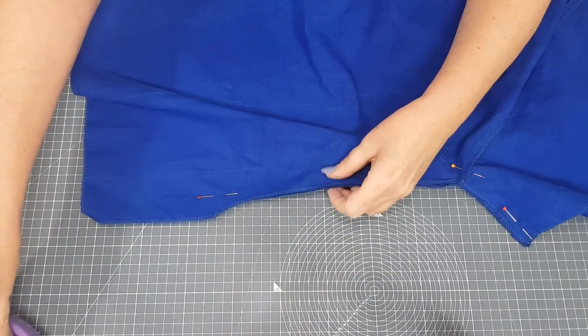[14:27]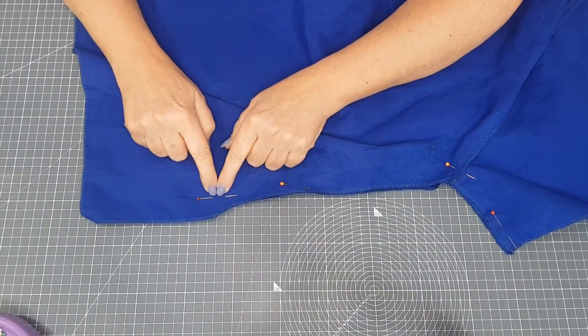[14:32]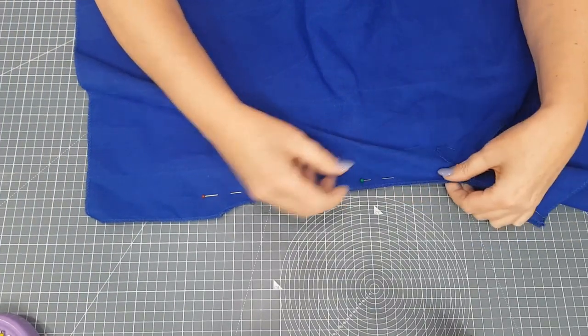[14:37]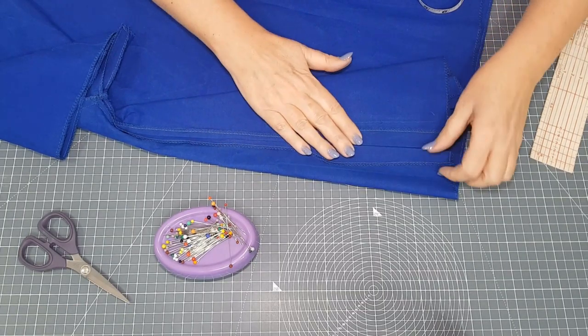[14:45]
Some of your patterns may have a dot here, but this was the download that we stuck together, and it didn't have many markings at all. So where the curve comes out, there's a point there, and I'm going to stop stitching at that point on both sides. You could measure that from the bottom and put a dot yourself, which would be a good idea so you have the same on both sides. We're going to stitch the side seams all the way down on both sides, and then press the seams open.
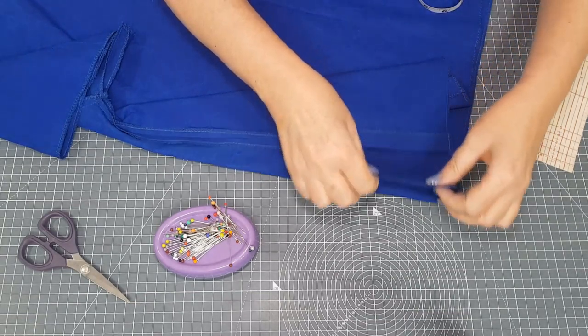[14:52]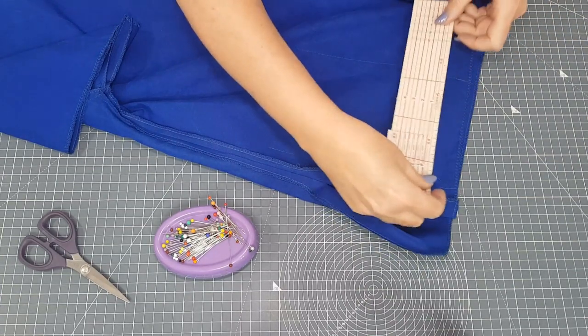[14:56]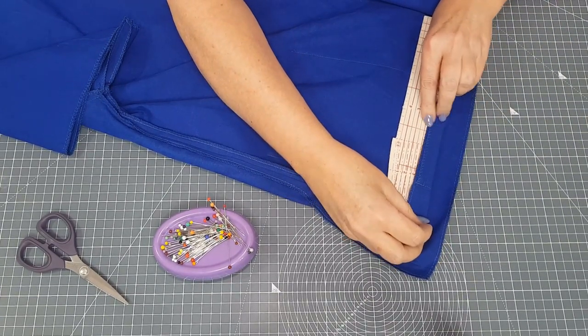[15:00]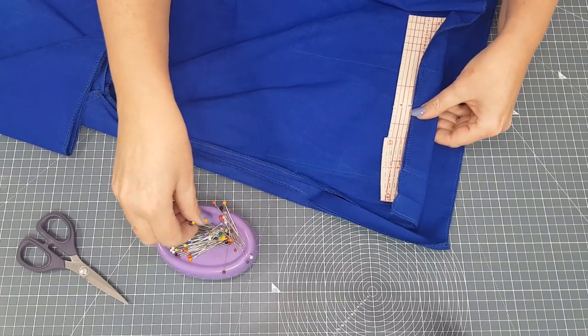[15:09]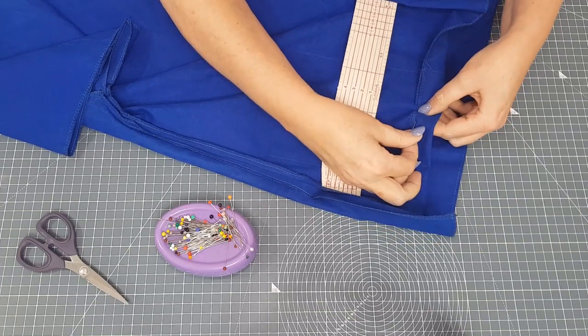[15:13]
Side seams have been stitched and pressed open, and I've pressed back the little facings for the splits as well. Before we stitch these, it's always much neater to turn up the hem first. So we're going to turn the hem up 3 centimetres. Just press it up, and at the front here, of course, you've got the pocket in as well. Turn it up 3 centimetres, give it a press, then pin it in place and stitch the hem all the way around, front and back.
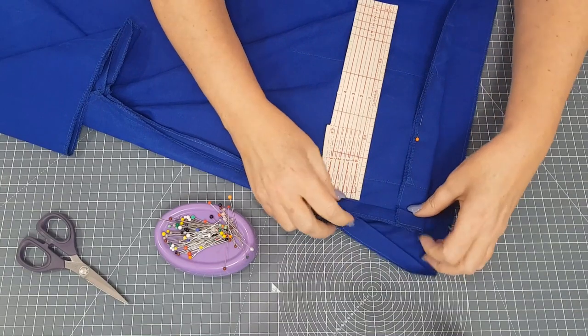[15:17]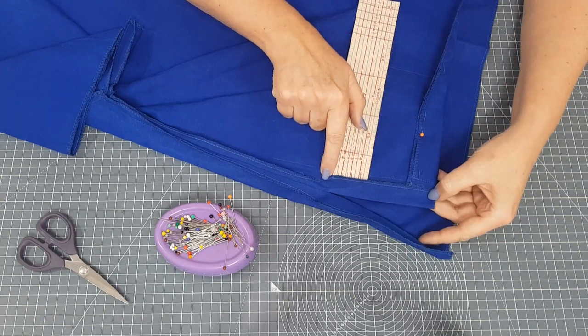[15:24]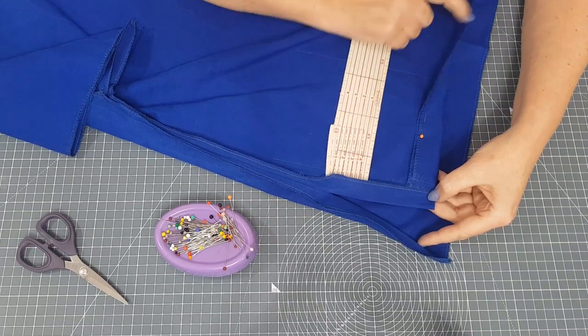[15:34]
Once you've done the hems, you can turn the splits back like this and stitch just around the edge of the overlocking. You can go straight across there, or you could do a point into the middle seam, whichever you feel more confident with. So straight up next to your neatening and then across. Okay, so we're going to do the hems and neaten the splits. That's the next bit to do.
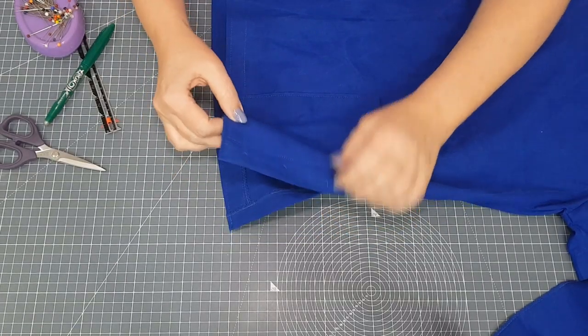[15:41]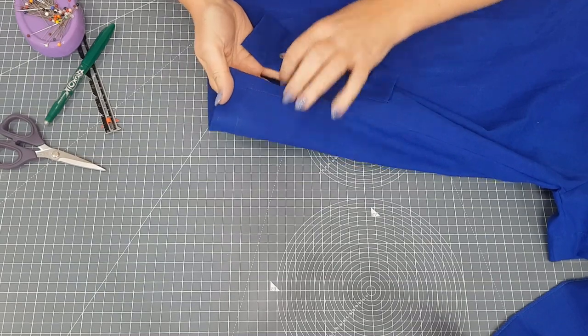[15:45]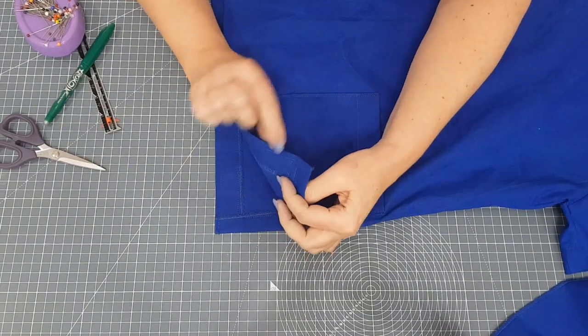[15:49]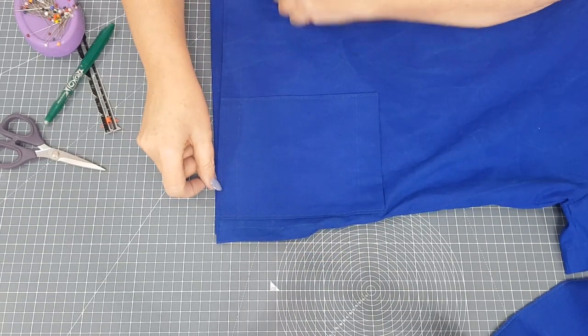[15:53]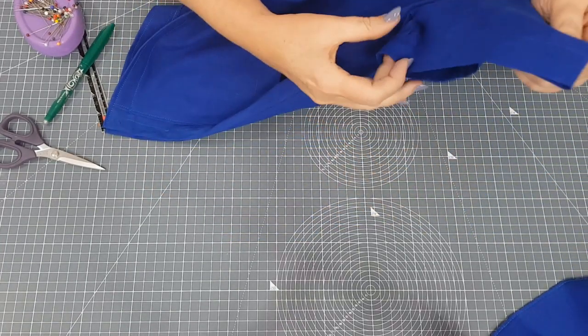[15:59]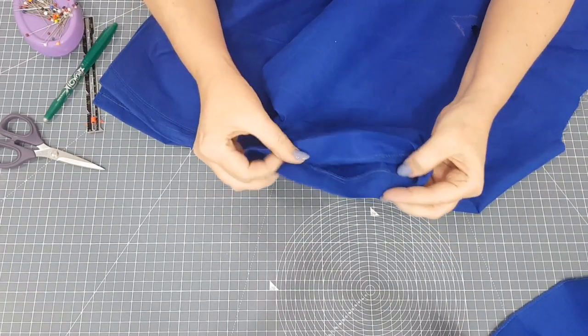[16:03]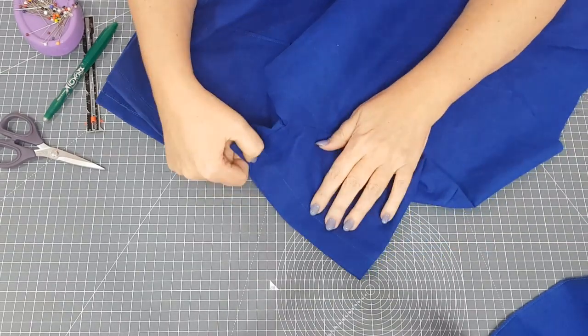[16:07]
I've done the hem. I've gone up and across the split as well, and I've done a second row of stitching along the bottom here, which just makes sure the bottom of the facings are stitched in place. It makes it nice and strong. So I've gone across the hem and up around the splits, and then the second row there. I've also turned up the hems on the sleeves and stitched those in place. So that's all nicely finished off, the hems on the bottom and on the bottom of the sleeve.
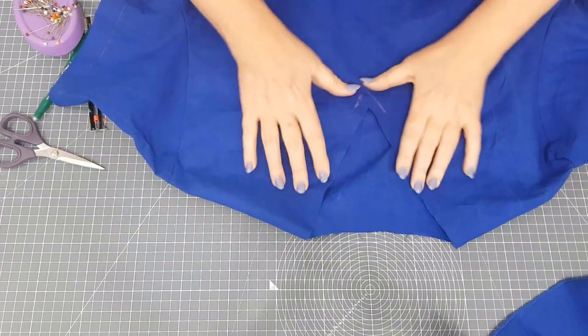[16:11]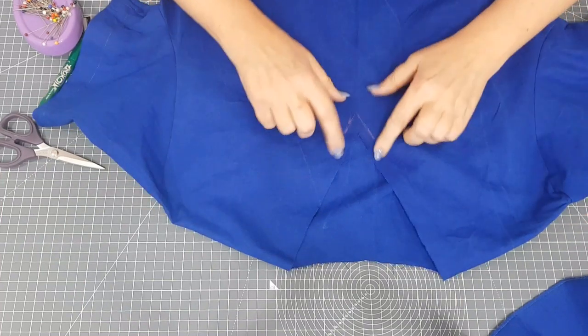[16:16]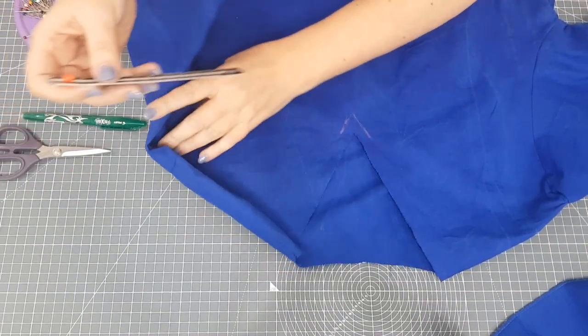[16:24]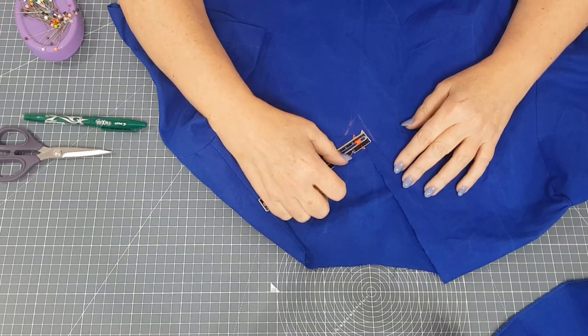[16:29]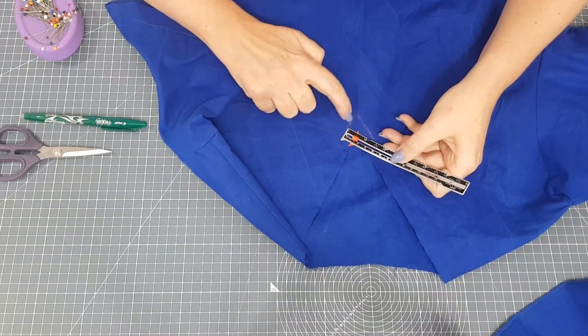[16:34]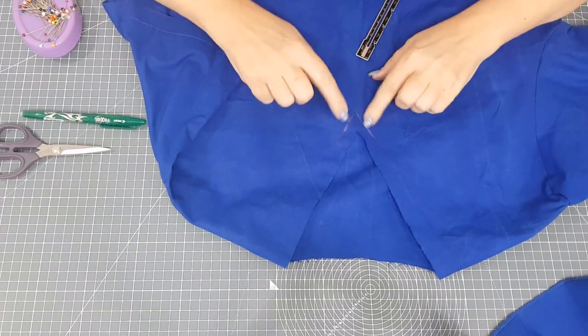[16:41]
Now we're going to do the facing to neaten up the neckline. The first thing I've done is mark the V on the front here with some chalk, and I've done a line of stay stitching here. If this is not marked on your pattern, all you need to do is measure the seam allowance, which on this pattern is 1 centimetre, and draw a line here and the same in this direction. Where those two lines meet, that's going to be the point of the V on our neckline. So that's got a bit of reinforcing stitching on there.
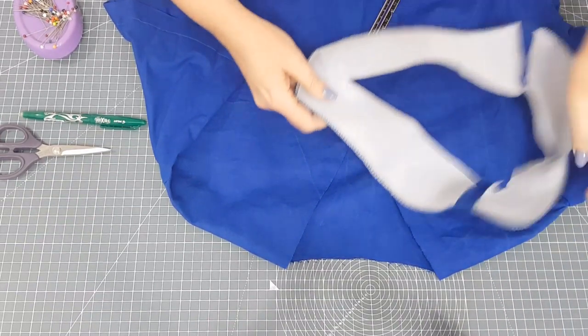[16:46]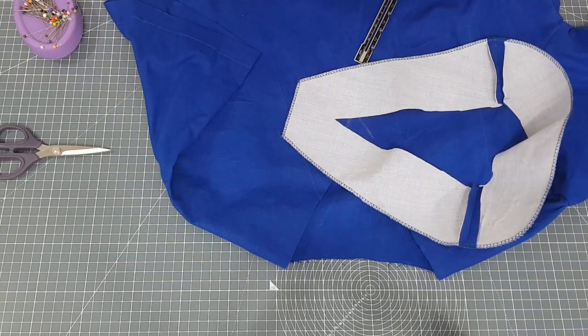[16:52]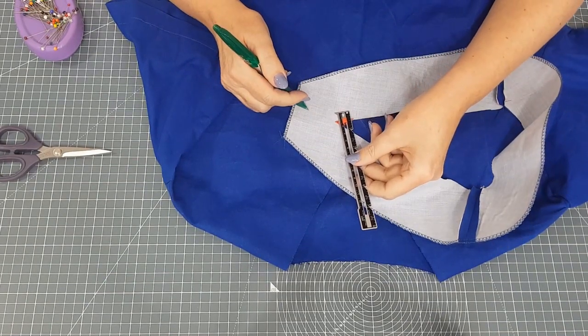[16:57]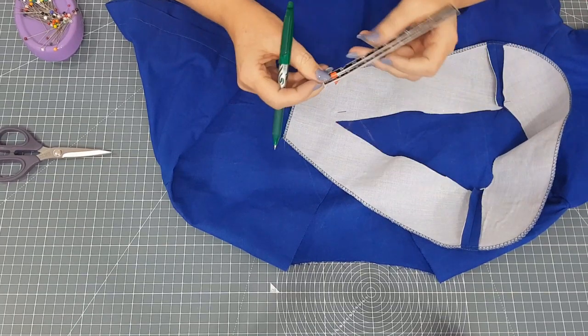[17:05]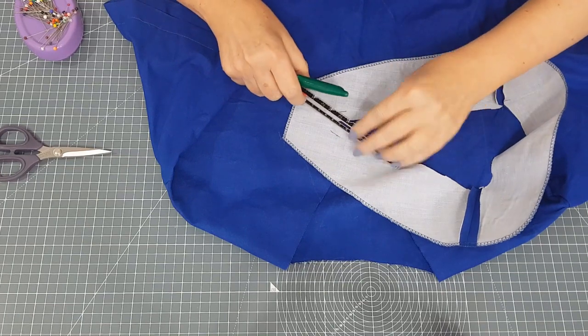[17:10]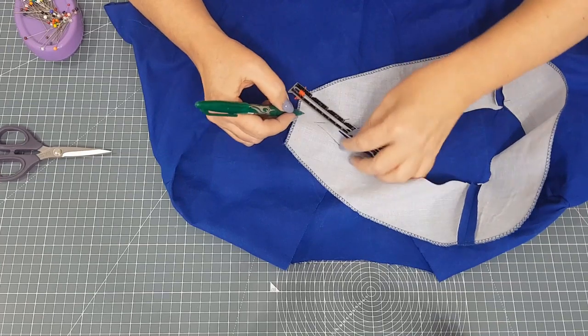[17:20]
And I've got the facing here, which we interfaced at the very beginning with our nice lightweight interfacing. I'm going to do the same thing here and mark a point, so I know where I'm going to be turning. My seam gauge is on 1 centimetre. I'm going to mark 1 centimetre in that direction and 1 centimetre in that direction, and then where those two lines meet, that's going to be the turning point.
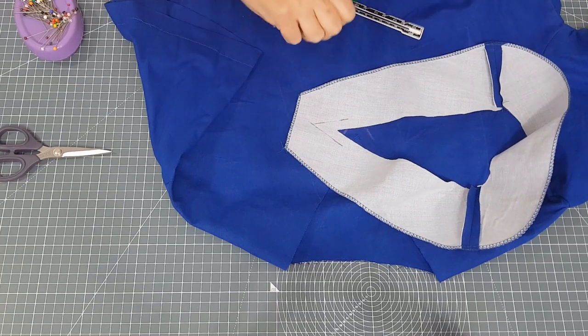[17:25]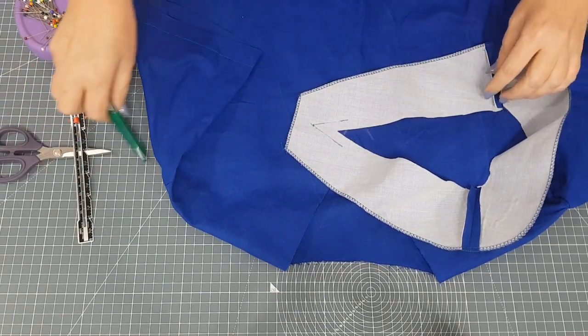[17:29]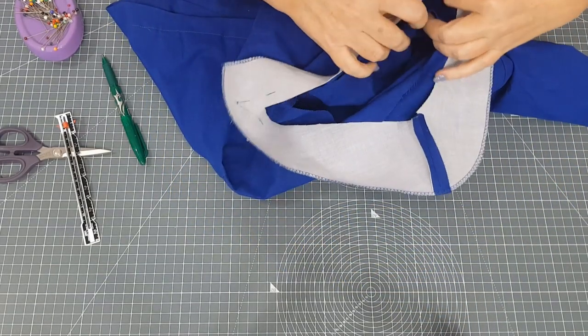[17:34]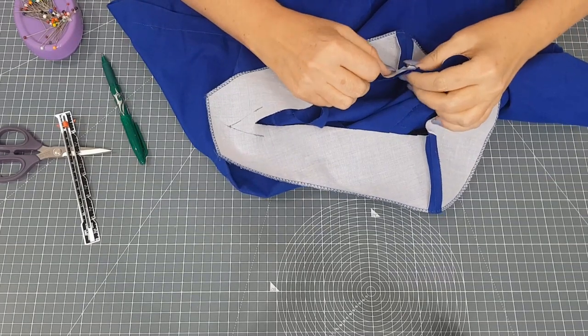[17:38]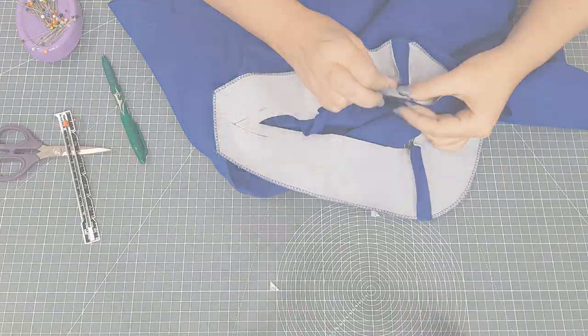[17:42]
Okay, so that point there. Now I'm going to pin the facing to the neckline, matching the shoulder seams, matching the V at the front. Then I'm going to stitch that on and come back to me, and I'll show you how to do the snipping and the next step.
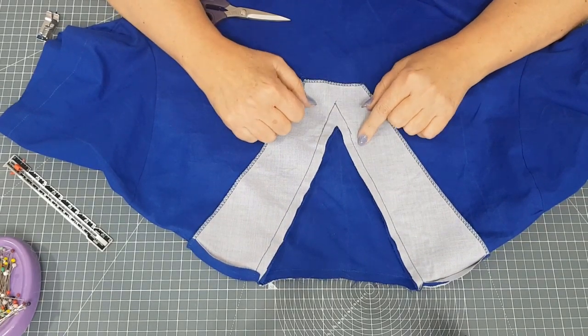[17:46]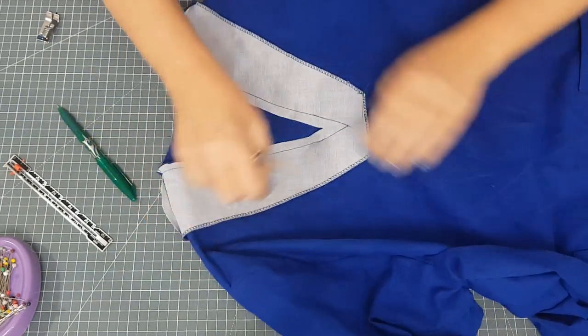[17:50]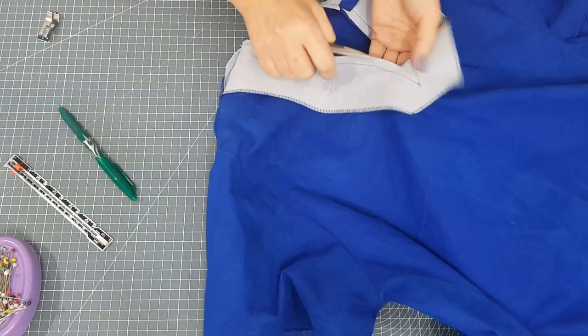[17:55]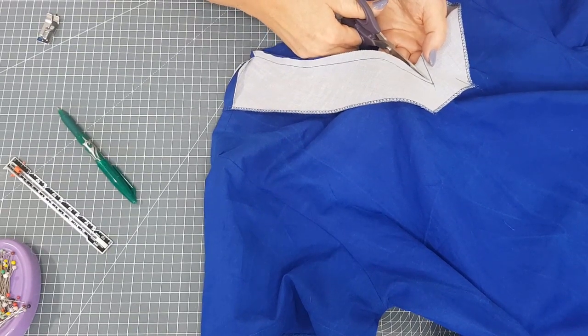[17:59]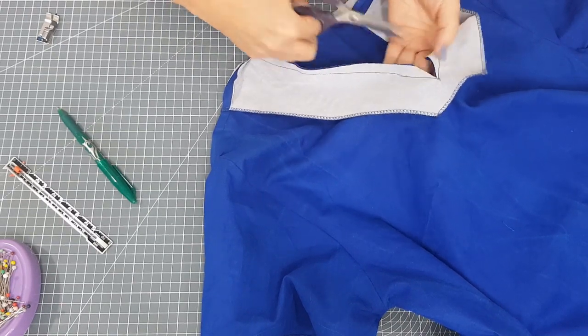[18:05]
So you can see I've stitched my facing on here. So now we need to do some snipping. The first thing we need to do is snip right down to that V. I'll turn this round so I get it really neat here. And you want to go as close into the V as you can without cutting the stitching. That means it will turn out nicely.
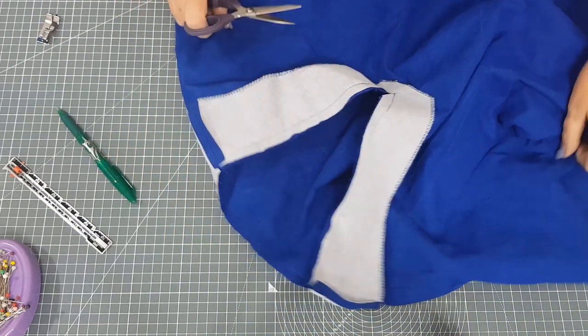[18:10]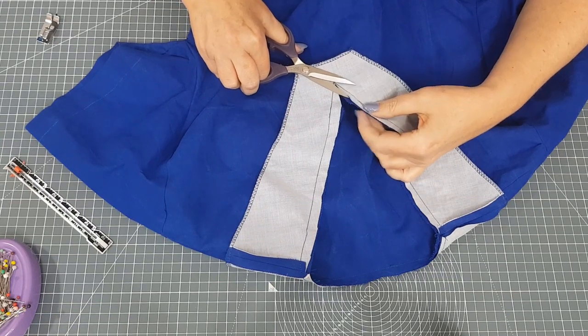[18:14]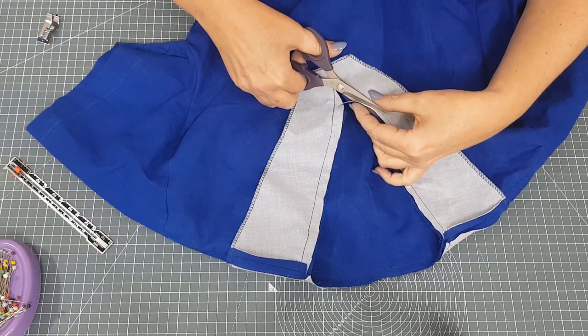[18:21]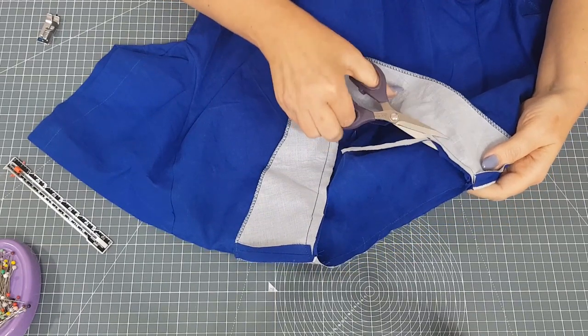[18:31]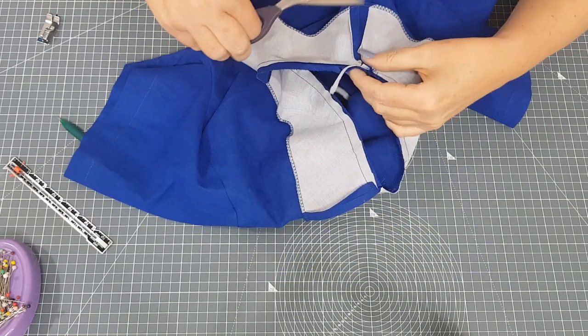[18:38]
And then we're going to trim some of the seam allowance. And I'm going to layer this seam, so I'm just going to trim away half of the seam allowance of the facing. So the bit that's got the interfacing on, trim that down to about half all the way round, just to layer the seam. And then because the back neck facing has got a slight curve on it, we're also going to do some snips around the back neck. Just get that trimming done.
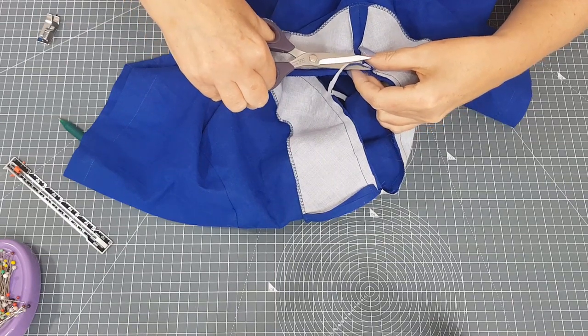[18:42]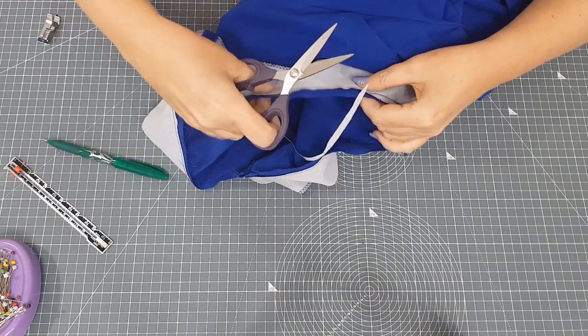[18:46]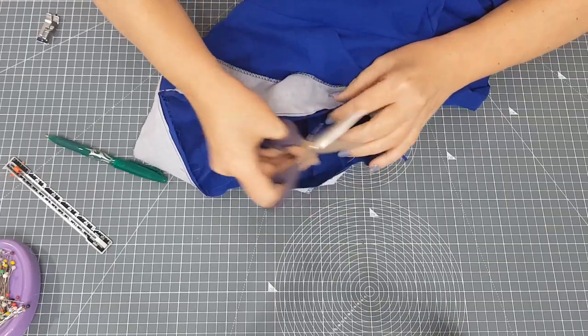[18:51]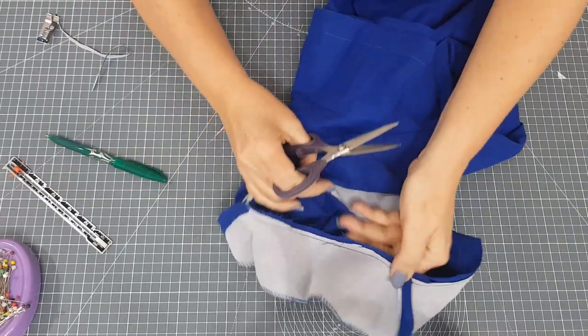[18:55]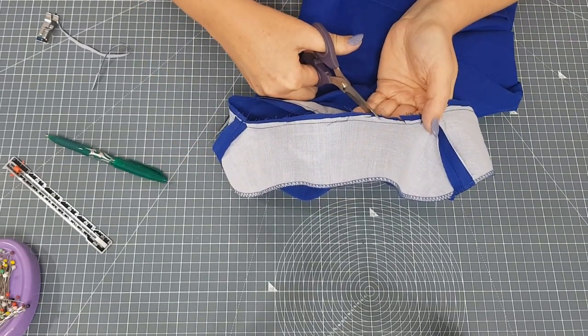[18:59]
And then I'll show you the next step. There we go. And then on the back neck here, I'm going to do some snips. So just at a slight angle up to your stitching, all the way across the back neck. And that will help that to turn in.
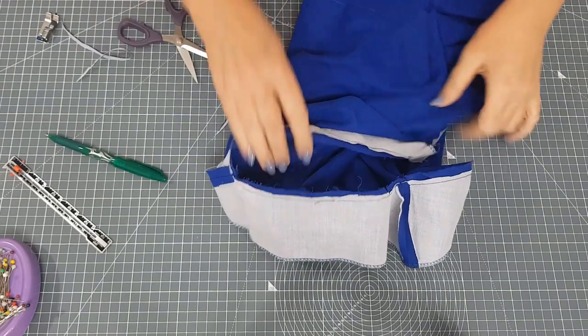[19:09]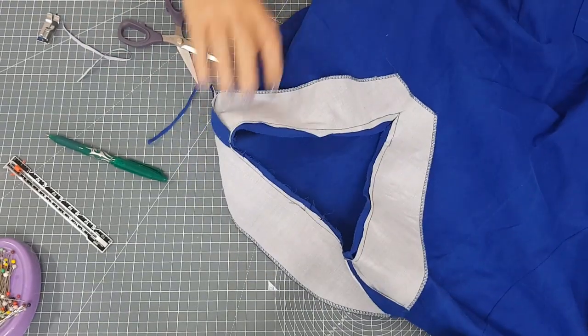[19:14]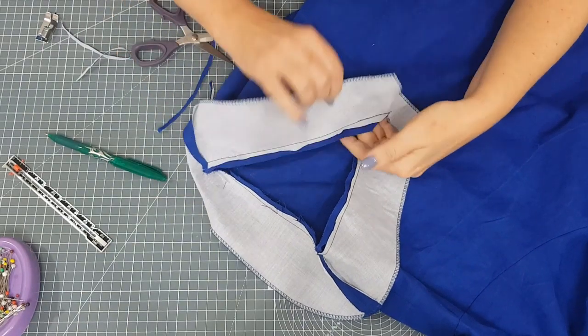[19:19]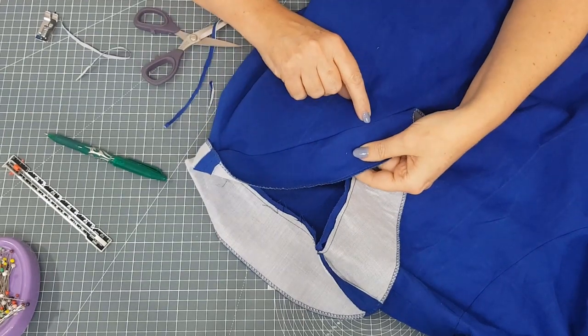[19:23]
Now the other thing we're going to do to help this neckline stay in is we're going to understitch. Now understitching is where you stitch your facing to the seam allowances. So you fold the facing over and you're going to be stitching 2 or 3 millimetres away from the seam. And you can't go all the way into the point, so I'll probably start about a couple of centimetres up, and then putting the facing and the seam allowances all in one direction towards the facing, I'm going to stitch a couple of millimetres away from the seam.
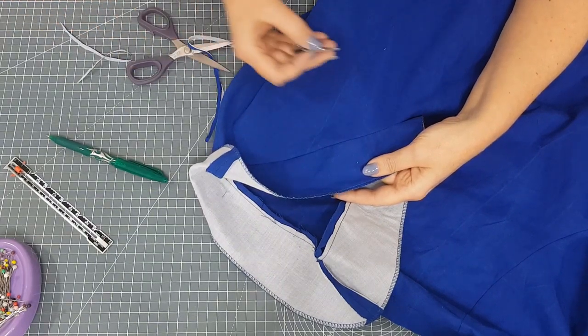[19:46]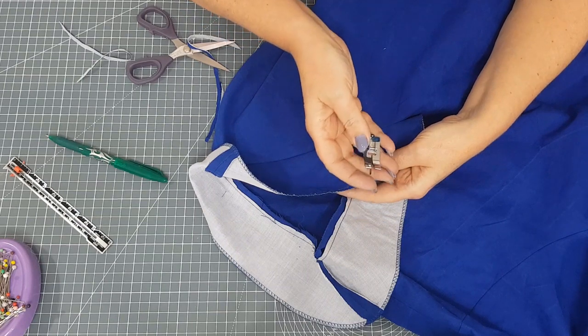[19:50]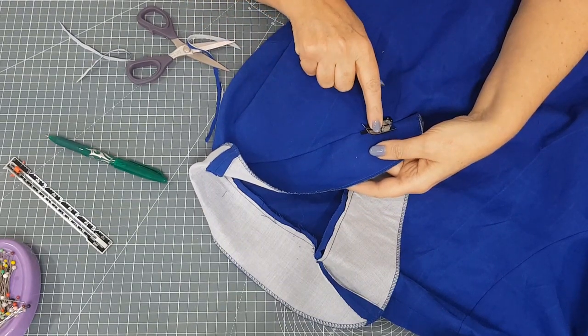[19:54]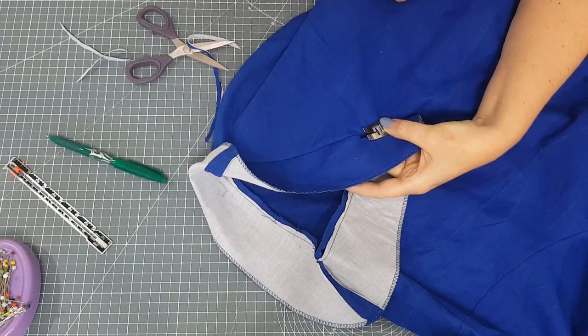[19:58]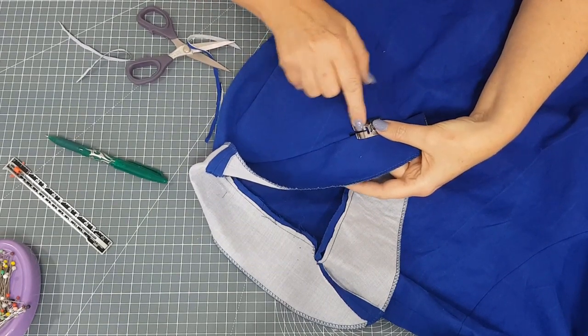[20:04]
Now you can do that by eye, or I sometimes use a ditch foot. This is a ditch foot on a Janome, that's S, and it's got a long guide in the front here which would sit in the ditch of your seam, and you can place that there, and then you can move your needle over a few places if your machine will allow you to. Move your needle over and then all you've got to do is keep that guide in the seam and you'll be stitching just to the side of it. So whichever way you decide to do it, we're going to understitch this seam around the neck.
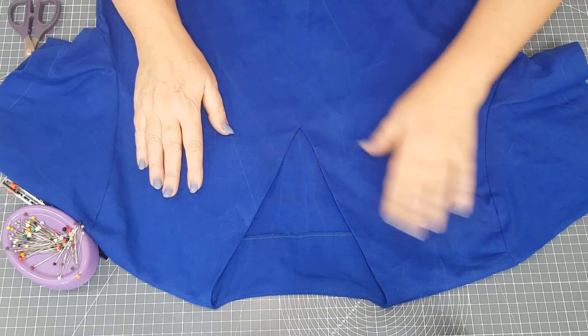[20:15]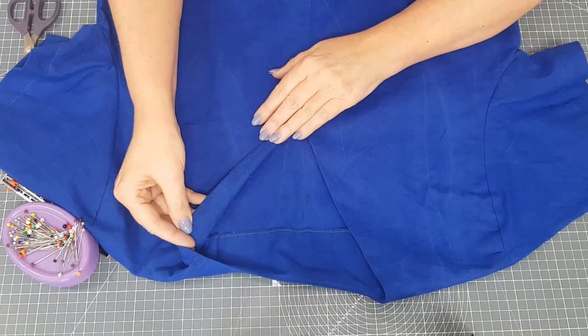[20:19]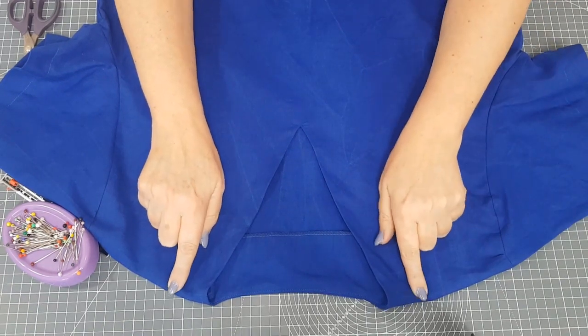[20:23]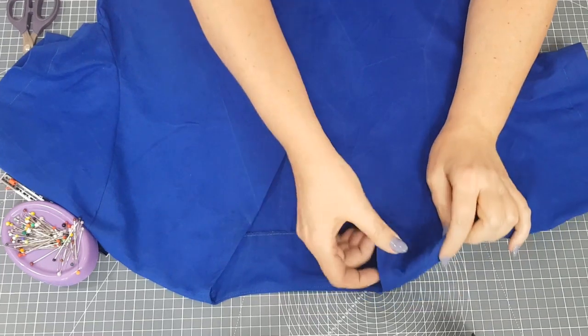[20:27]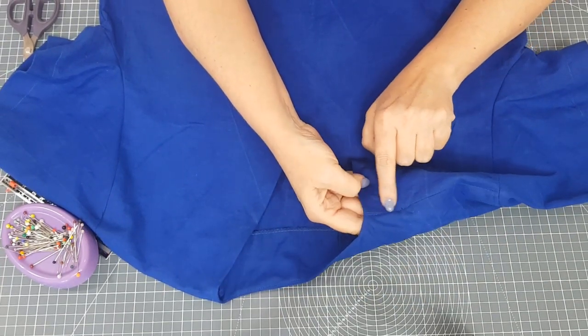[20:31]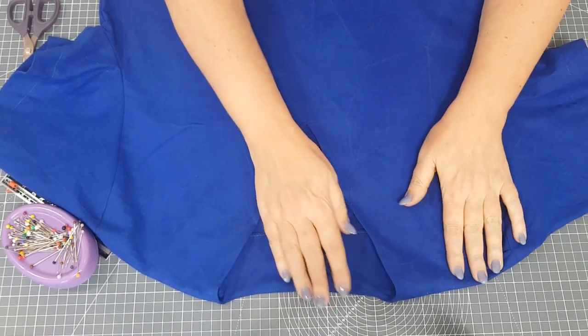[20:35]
Your scrub tops are now finished. I've understitched the neckline, as you can see there, and pressed it all through to the wrong side. And you could, if you wanted to, top stitch around here to help it to stay in place. But what I've done is I've just stitched the facing along the shoulder seam here, and that will hold the facing in place. So give it a nice press.
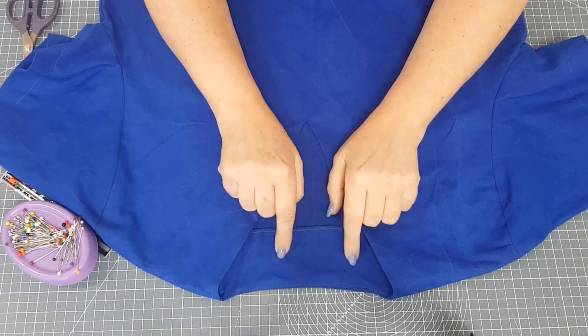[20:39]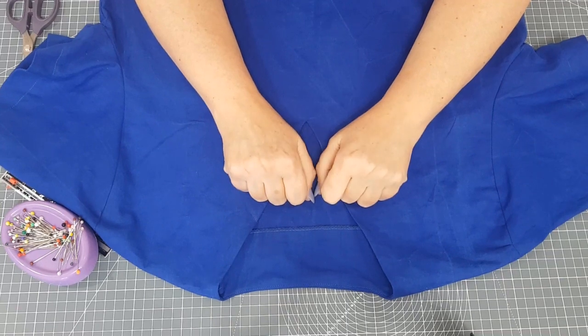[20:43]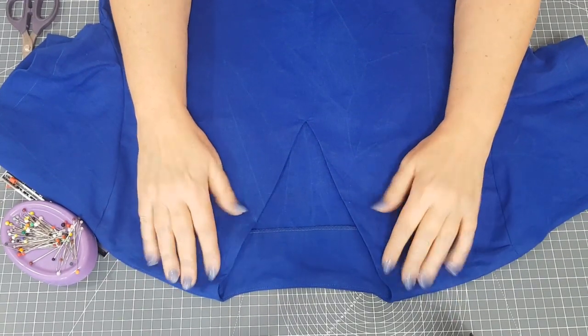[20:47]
Don't forget to put a label in the back with the size in it, and you could do a fancy label if you've got one, but at least have the size in the back so they know what sizes they are. And that's the top finished. So let's move on to the trousers.
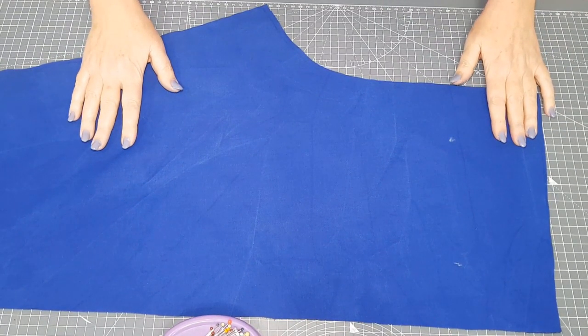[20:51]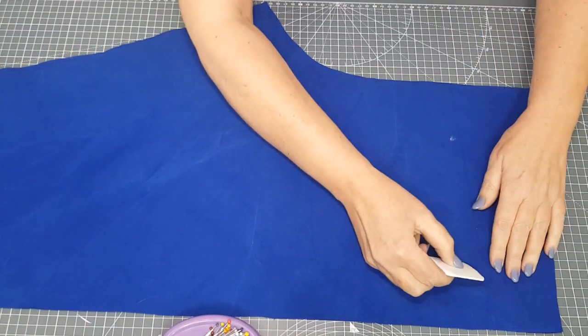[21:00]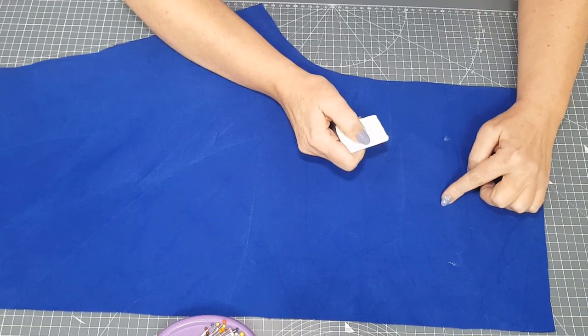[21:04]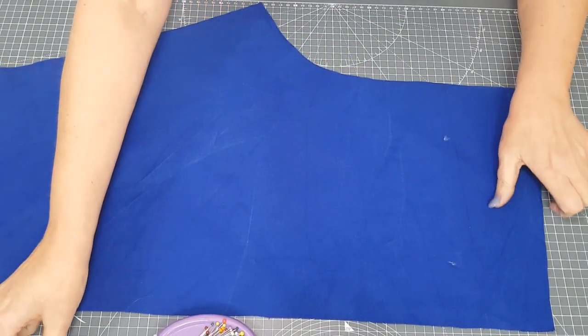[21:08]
We've cut out our trousers, and the first thing we're going to do is the pockets on the back. So I've marked the pocket placement from using the pattern, just with some chalk that disappears when you iron. That's tailor's soap. So you can use a friction pen if you're working with a pale colour. With a dark colour you need to use something like this. And then we're going to make up our pockets.
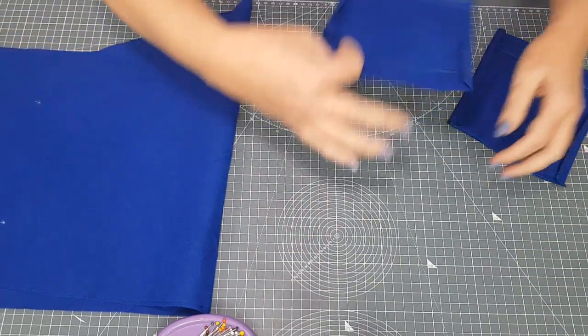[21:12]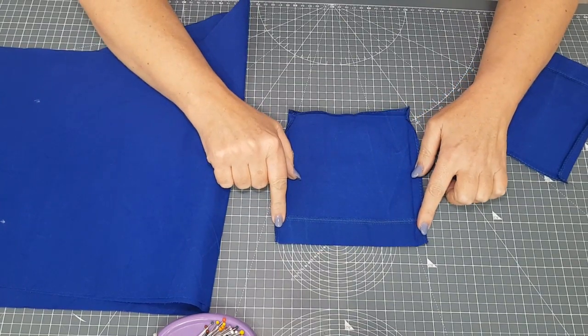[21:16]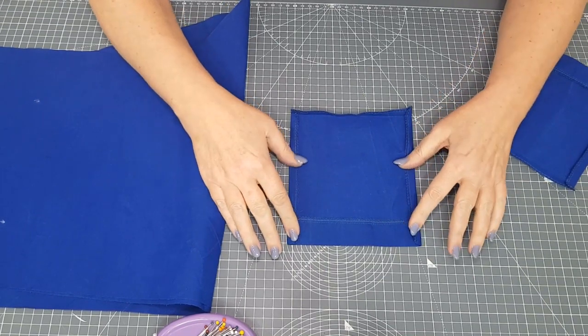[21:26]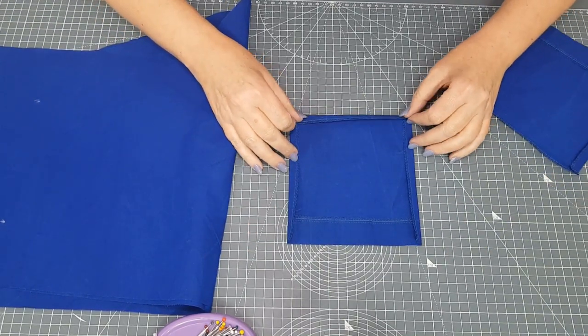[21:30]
So the same as we did with the pockets on the top, turn over the top 3 centimetres and press it. So actually I've overlocked around the edge first. So neaten the edges first. Turn over 3 centimetres and press, and then stitch the top bit down. And then we're going to turn in the edges by 1 centimetre like we did before. But this time we've also got to turn up the bottom as well and give that a press. So that's our pocket all pressed.
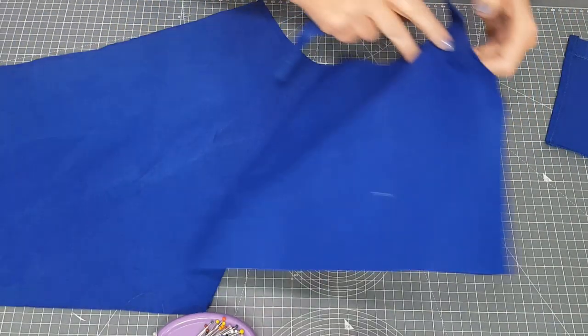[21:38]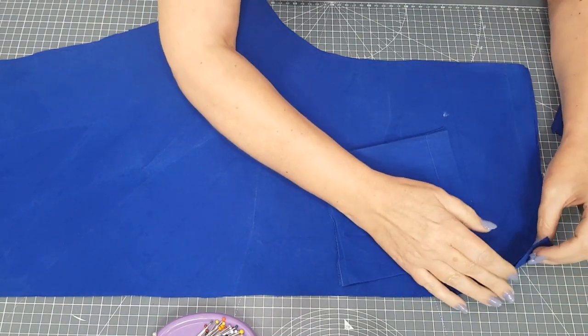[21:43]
Then we're going to take it to the trouser back piece, match the tops. I've got both pieces here, so I'm just going to move one out of the way so I don't pin right through.
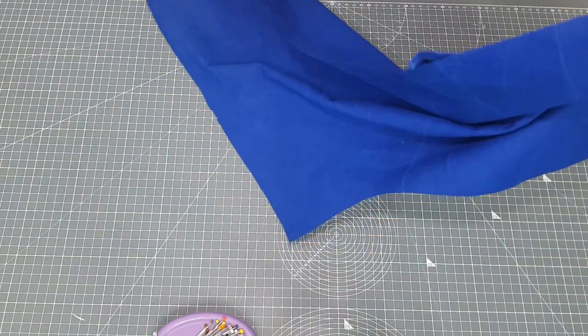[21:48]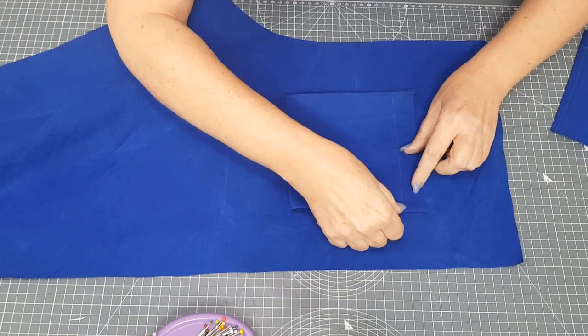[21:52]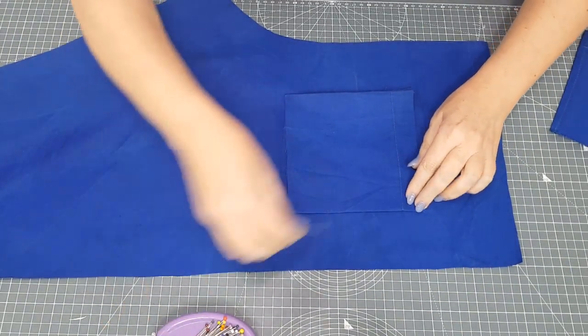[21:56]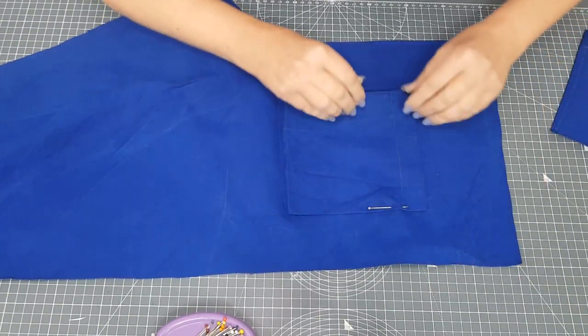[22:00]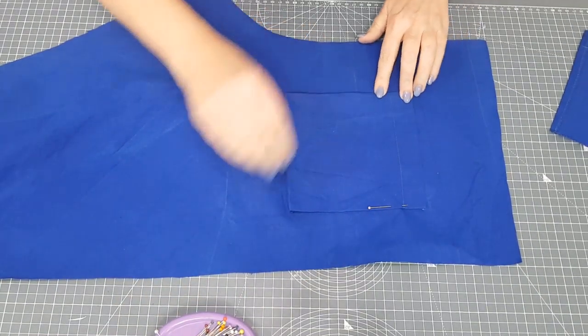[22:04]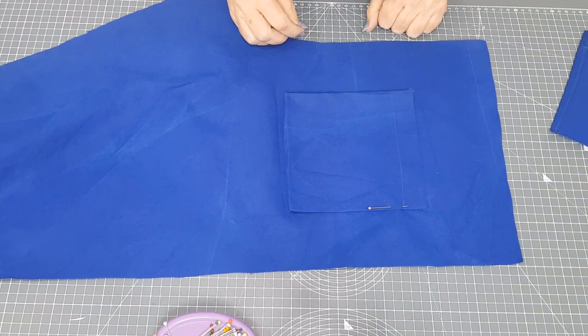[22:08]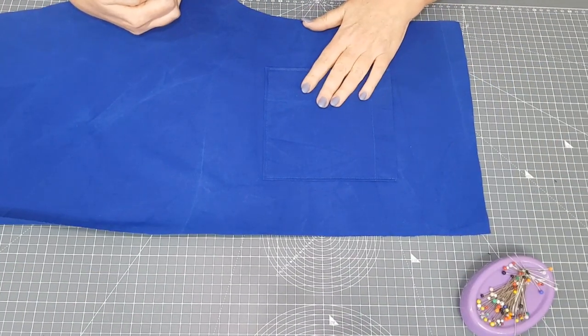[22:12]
There we go. So match the one top corner to that dot and the other top corner to that dot. And then pin all the way round and stitch the back pockets on. So that's the first job to do, is to stitch your pockets onto the back of your trousers. That's the back pocket on. It's nicely top stitched around the edge.
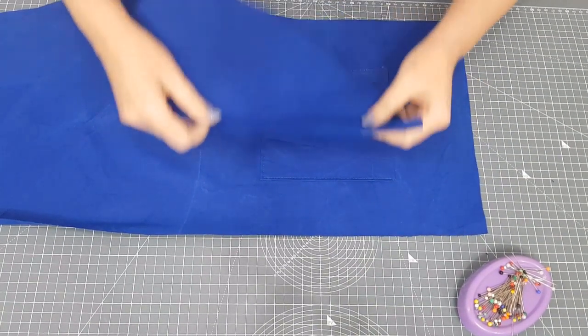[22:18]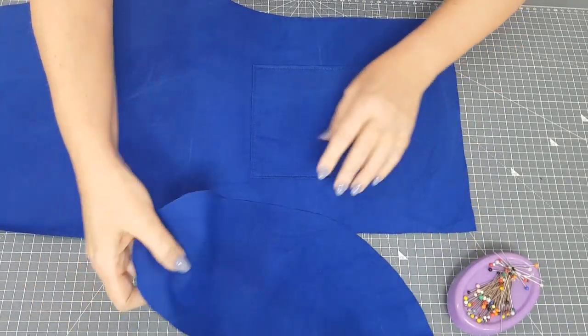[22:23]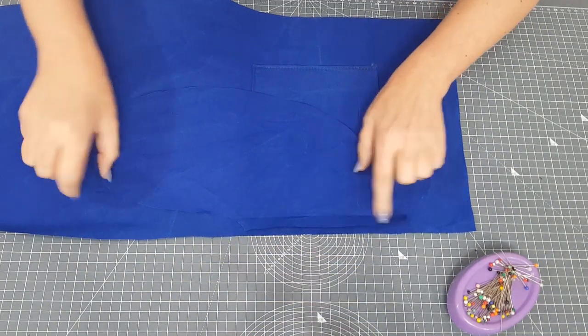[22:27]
And now we're going to do the side pockets. So these are the side pockets here. You should have 4 of those, all the same. And we're going to pin 1 to each side of the back, side seam on the back, and 1 to each side on the front.
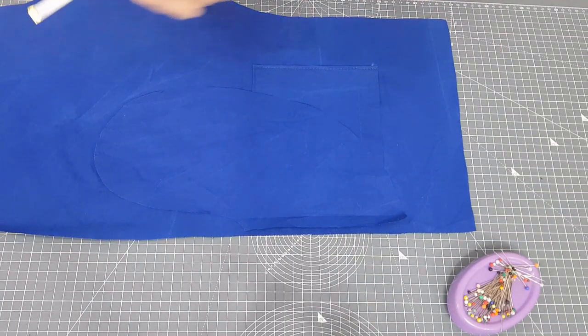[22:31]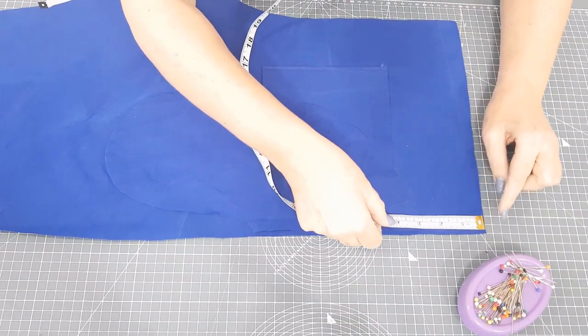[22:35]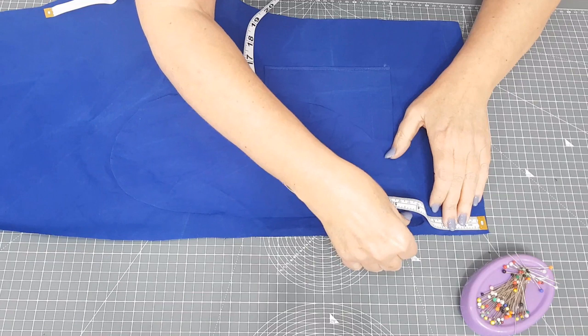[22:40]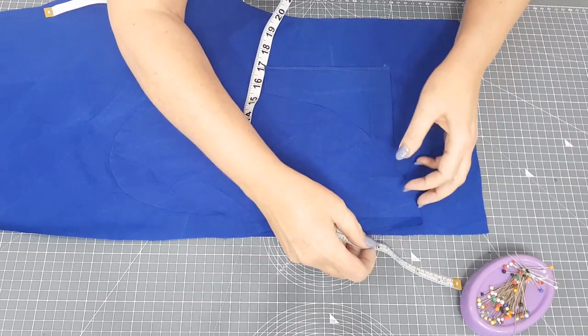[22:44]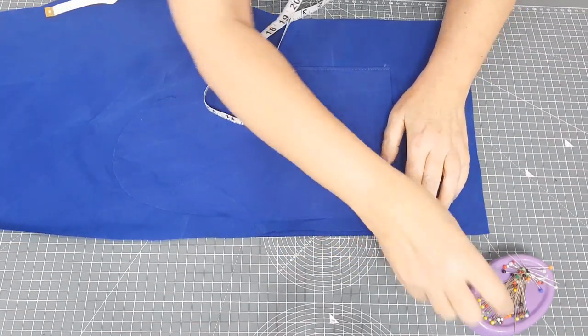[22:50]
Now my pattern didn't have any markings for the pocket placement. Yours may well have it. I'm going to do mine 7 centimetres from the top. There, so I'm measuring 7 centimetres down and getting that in the right place. There. And I'm going to pin these edges together.
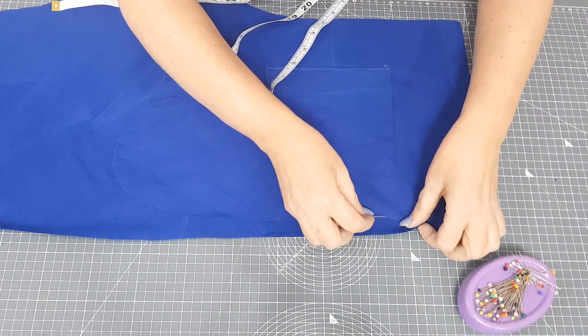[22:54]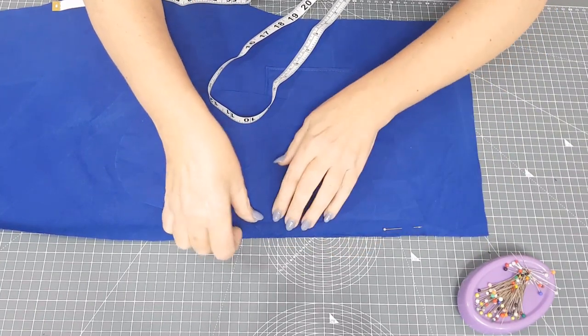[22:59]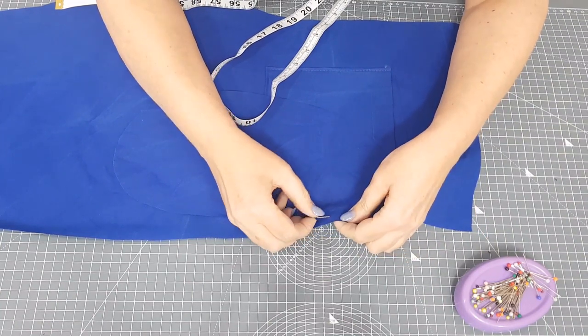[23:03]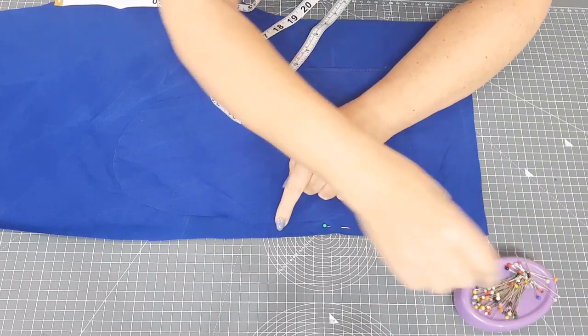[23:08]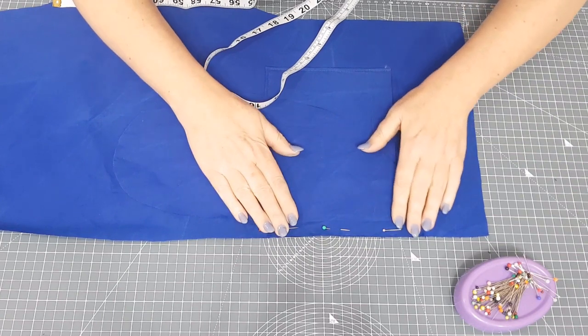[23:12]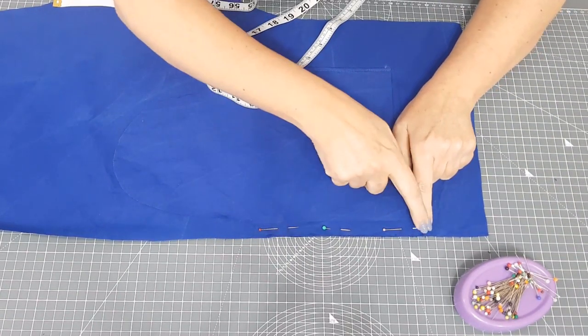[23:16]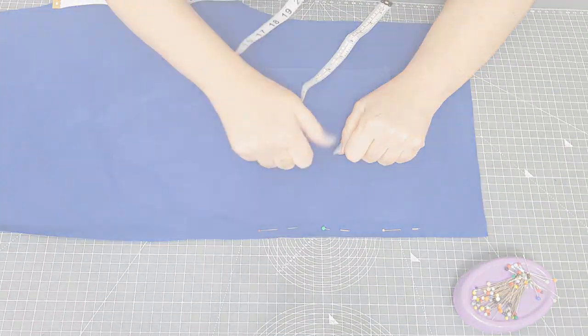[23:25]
1 each side of the front trouser leg and 1 each side of the back. And I'm going to stitch that on just inside the seam allowance. So if your seam allowance is 1 centimetre, you want to go just inside it so it's slightly smaller. And that will help the pocket to stay inside nicely. So go ahead and stitch that one on, and then you're going to overlock or neaten just this area here that you've stitched. So you've got 4 seams to stitch and 4 little bits to neaten with the overlocker.
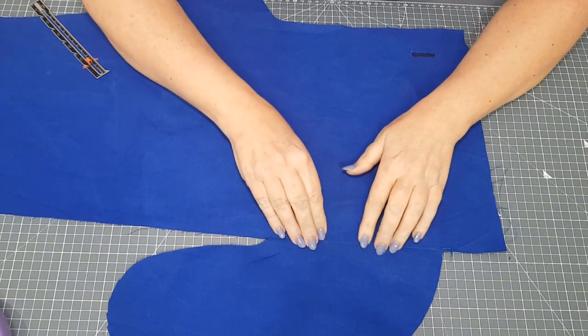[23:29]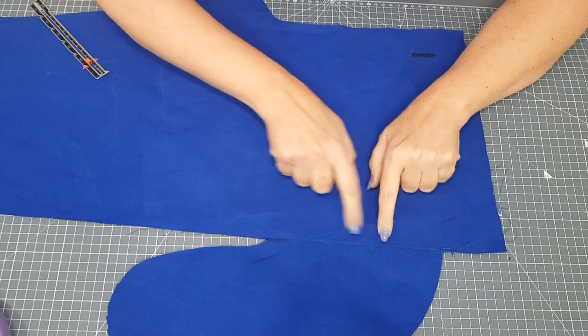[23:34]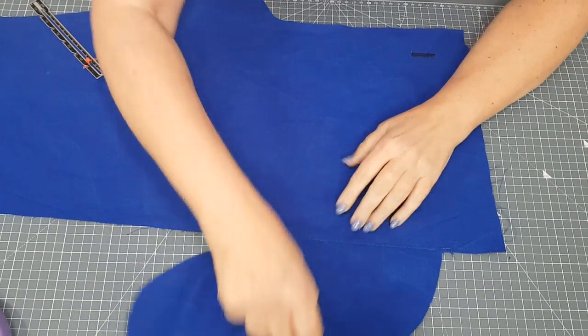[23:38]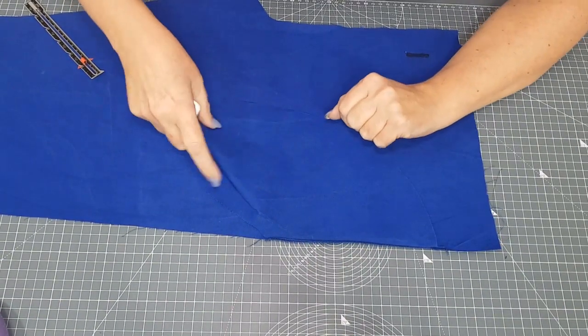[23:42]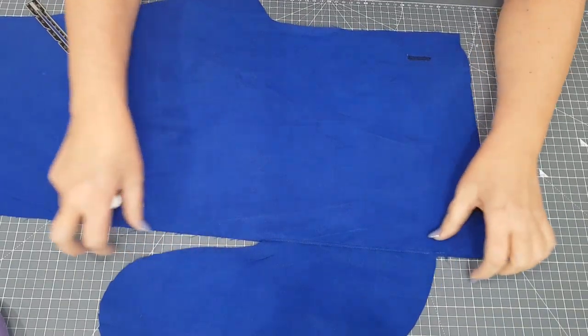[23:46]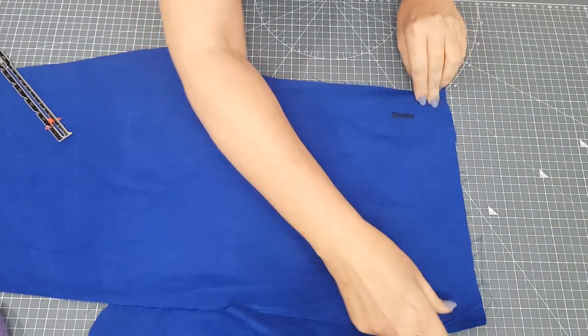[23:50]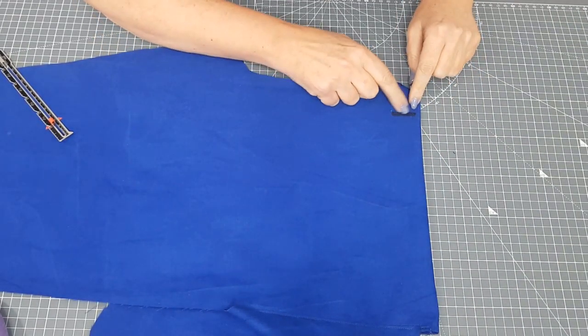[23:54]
So I've stitched my pocket on and I pressed everything towards the outside, and then I've understitched. So as we did around the neck on the top, I've understitched the pocket to the seam allowances at the side here. I'll just show you, I did neaten that little bit as well with the overlocker before I did the understitching. The next thing you need to do is a buttonhole on each side of the front piece. So that when we turn this top down and we thread our drawstring through, they'll have a buttonhole here.
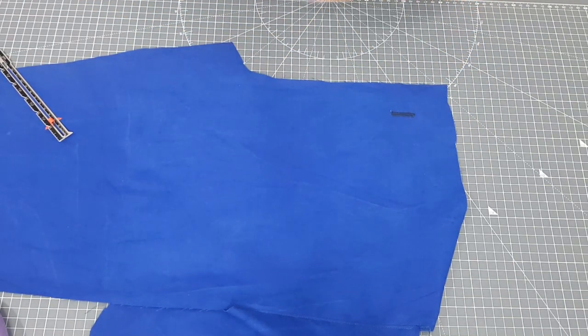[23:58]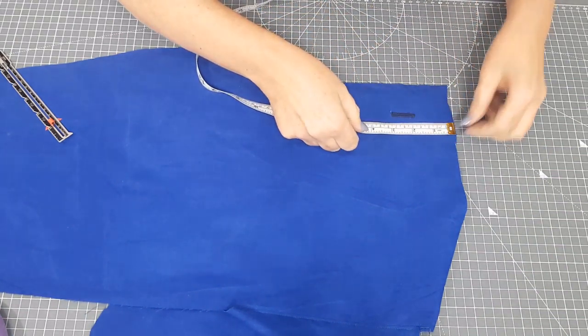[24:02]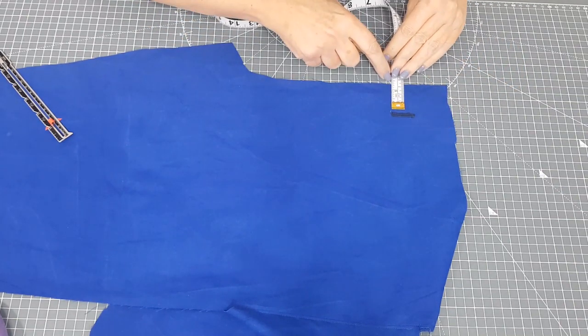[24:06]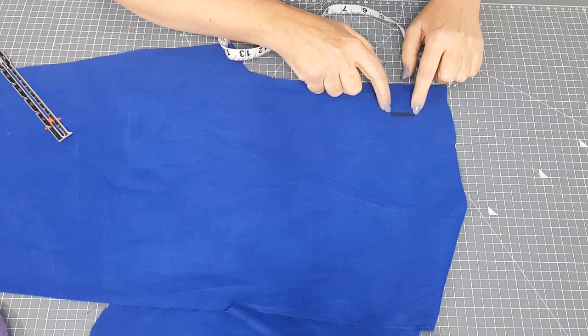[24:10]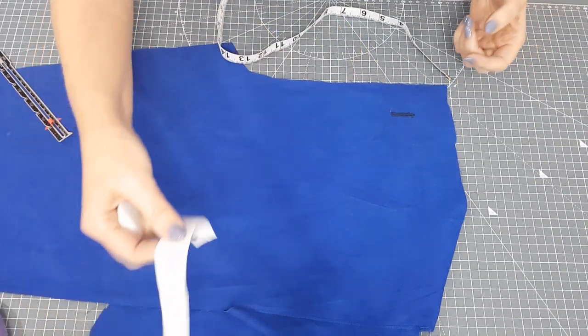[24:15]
So the buttonhole, again, there was no marking for this on my pattern, so I have done mine 5 centimetres from the top and 4 centimetres in, and I've done the buttonhole 1 inch long, and that's because I've got 1 inch wide tape, so when it comes through, that will be able to come through the buttonhole here.
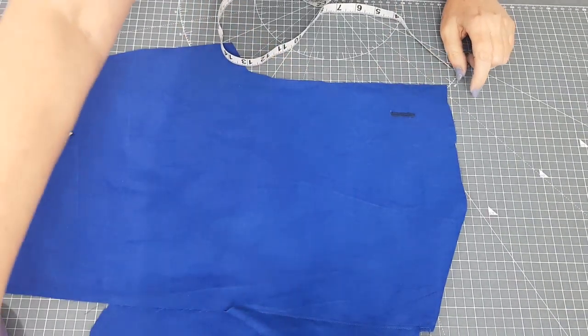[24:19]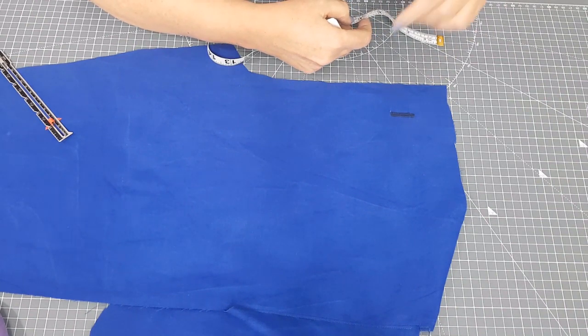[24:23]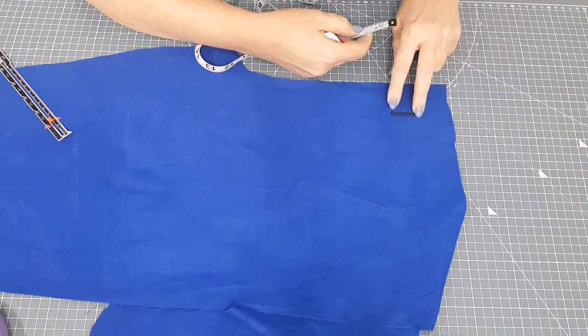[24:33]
Now if you're not familiar with your buttonhole foot on your machine, your one-step buttonhole, we have got a video for that, and you can click the link in the top corner there, and that will take you to the video on how to do machine buttonholes, and that shows you putting a button in the back of the foot. But you don't have to have a button in the foot to do a buttonhole. You can just pull the back of the foot out to the size you want it to be. Do a few practice ones to get the right size.
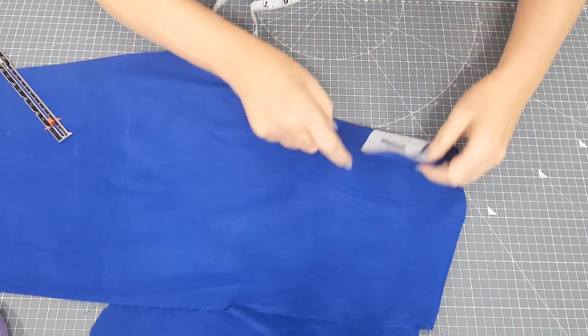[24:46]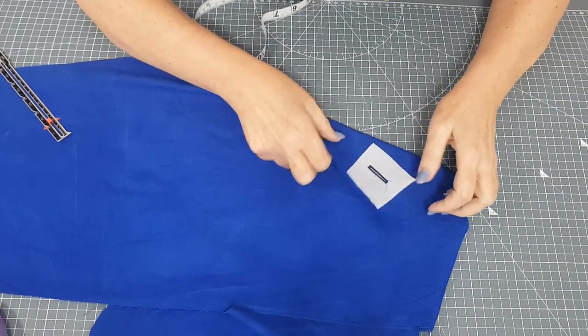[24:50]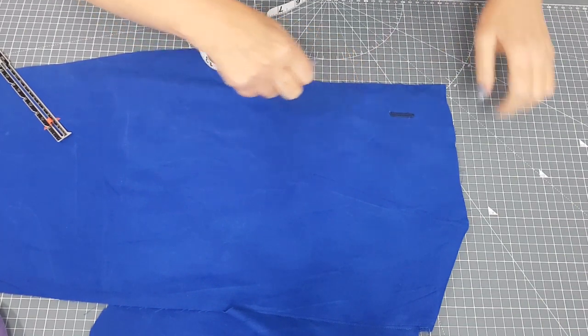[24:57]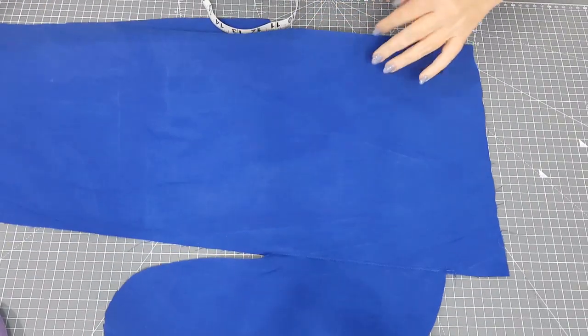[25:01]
Before I did this, I did put a little bit of interfacing on the back there as well. So I've got a bit of fusible interfacing on it. So do a few samples of your buttonholes so you get the right size, and then stitch your buttonholes on the front. So once you've got all that ready, we're then going to do the side seams and the inside seam on each leg.
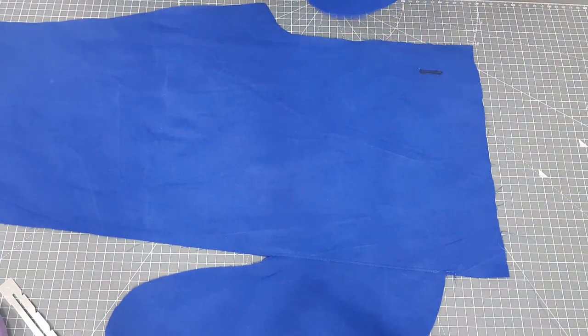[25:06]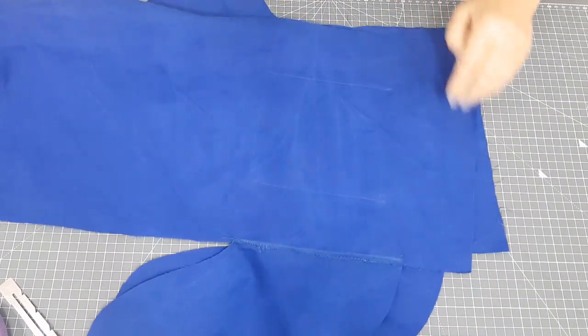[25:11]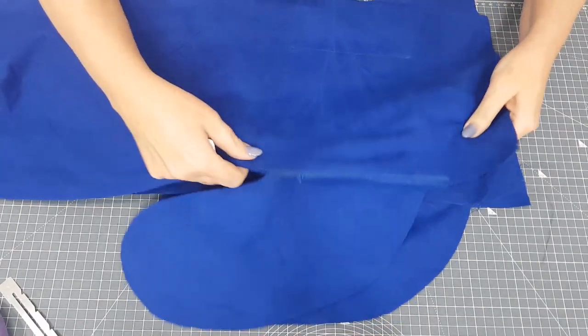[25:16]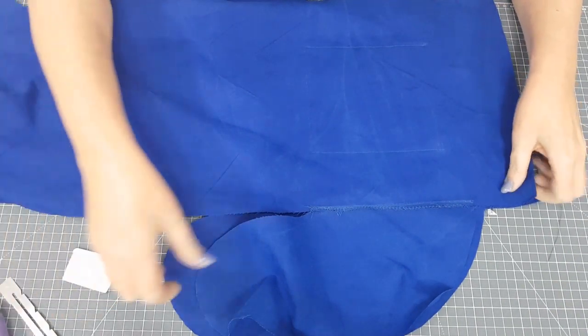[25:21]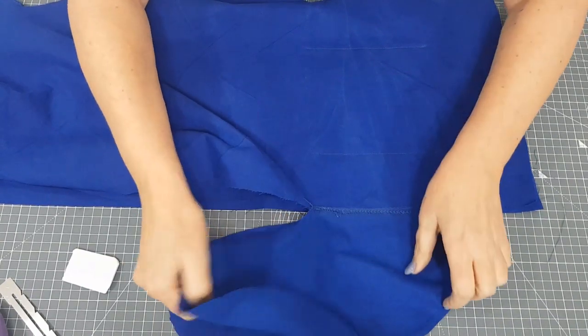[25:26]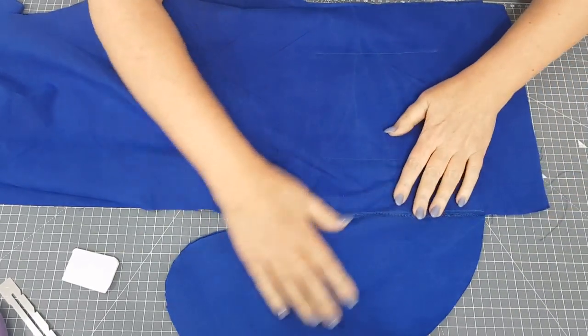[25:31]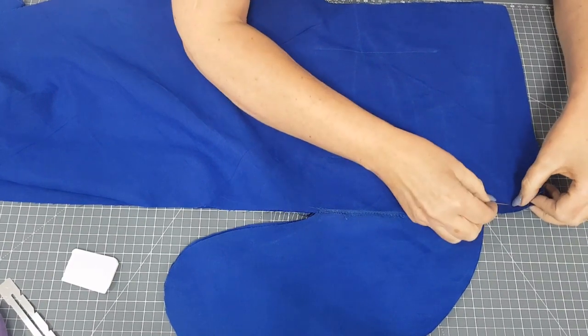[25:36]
So we're going to get one front and one back piece and place them right sides together like this. So for the side seam, the outside leg, I'm going to pin down the side and around the pocket. So make sure everything's nice and flat here, and on top of each other. And you're going to pin down the side and around the pocket.
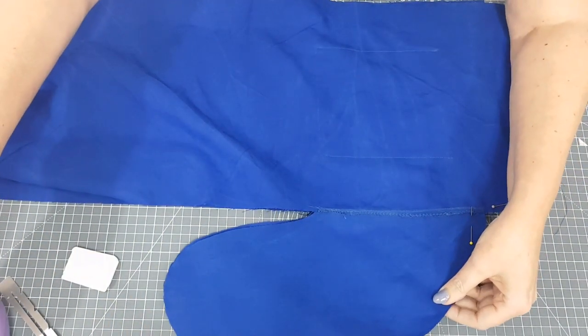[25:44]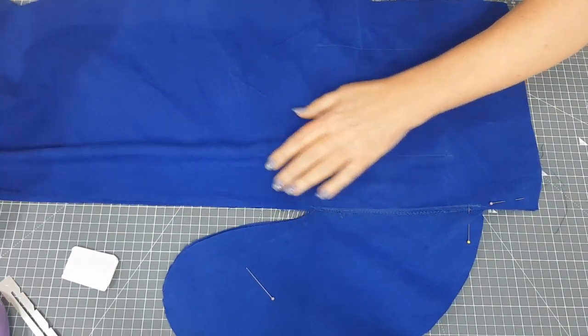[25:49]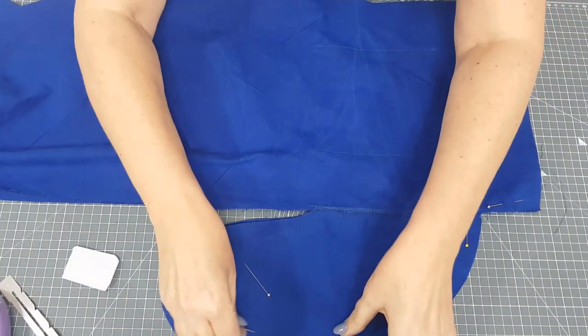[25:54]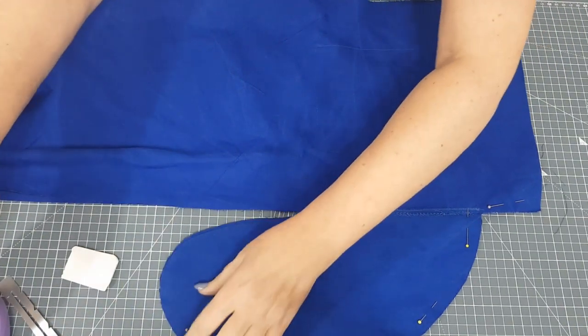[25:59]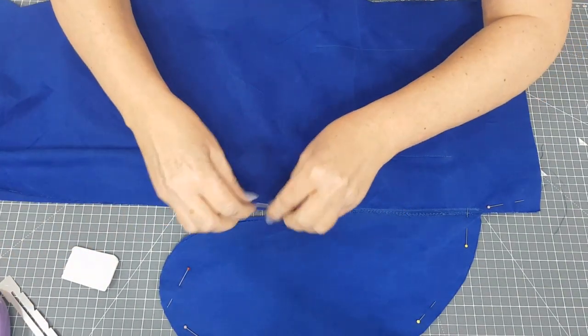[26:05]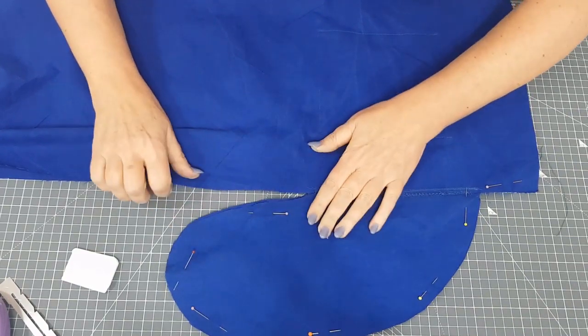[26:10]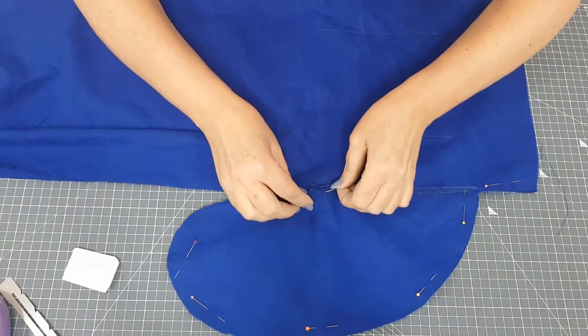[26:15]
So what you might want to do here to be really accurate is give yourself some turning points. So I'm just going to pin this a little bit, pin this pocket together just to give it a bit more secure, here. And we'll be coming up this way here. I'll be coming all the way up here to here, and then we'll need to turn and go down the leg.
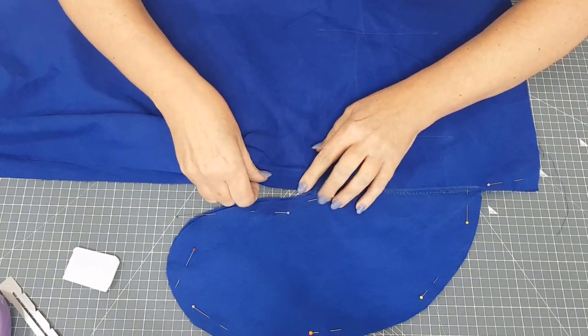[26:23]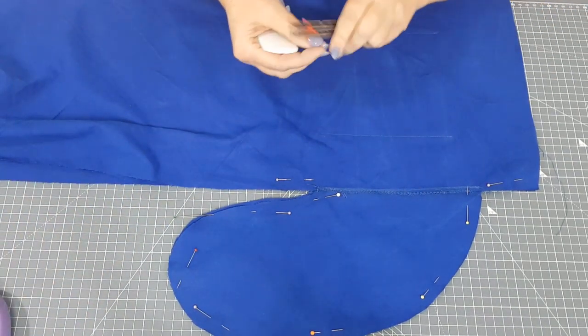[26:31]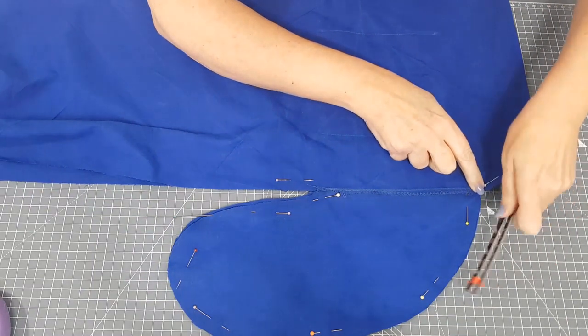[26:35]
So you might want to give yourself some turning points. Now the seam allowance on this is 1 centimetre. So here I'm measuring in 1 centimetre here, and I'm measuring in 1 centimetre here. And that's where I need to turn at that point.
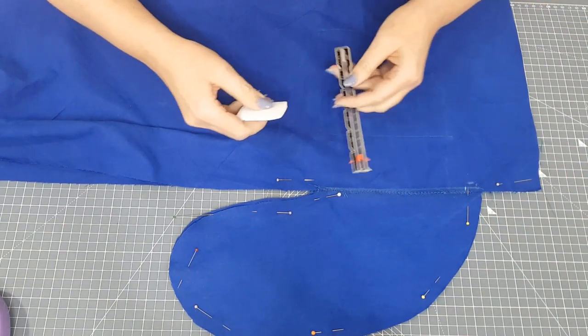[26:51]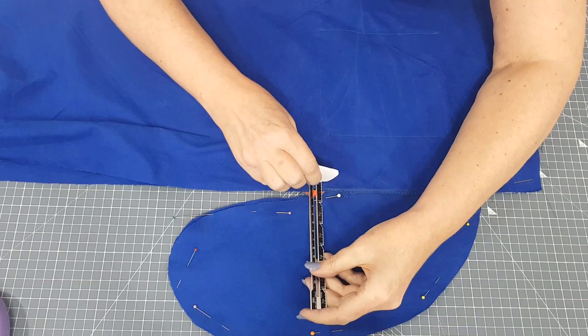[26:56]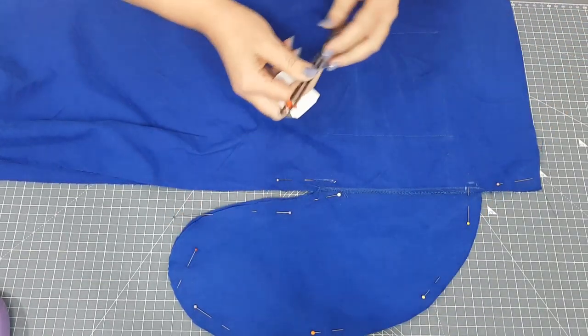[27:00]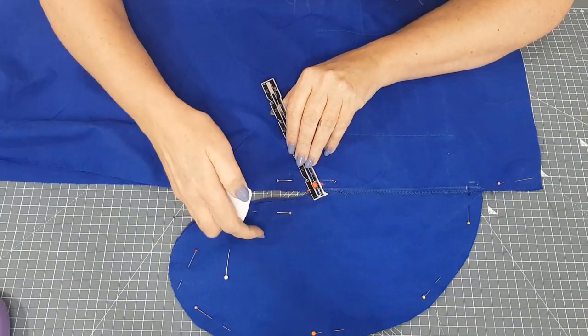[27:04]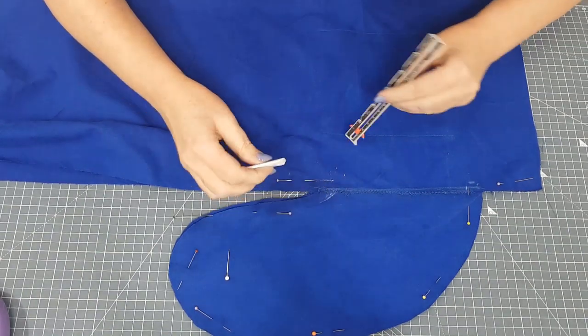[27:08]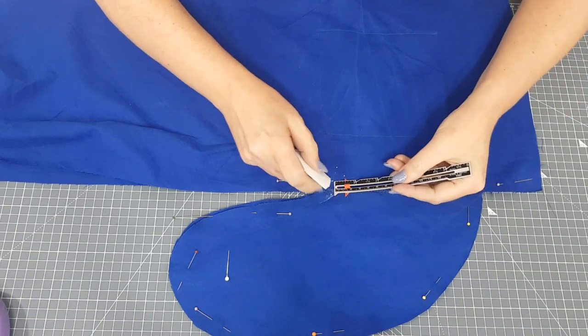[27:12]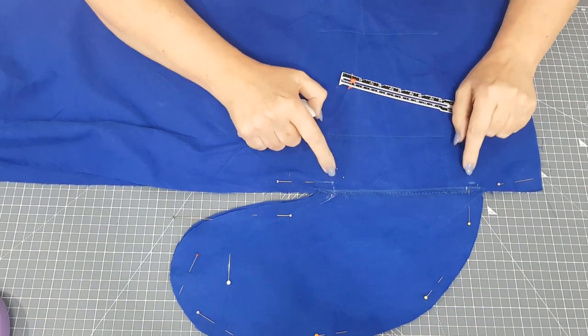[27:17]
And here I measure 1 centimetre here and 1 centimetre on the pocket. I'll put that pin out so I can do this. You can see where you need to turn. Now you could come up to a point there, but that's going to make the opening a bit small, so I'm going to take that across.
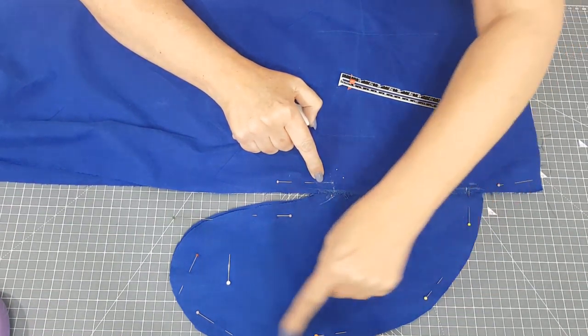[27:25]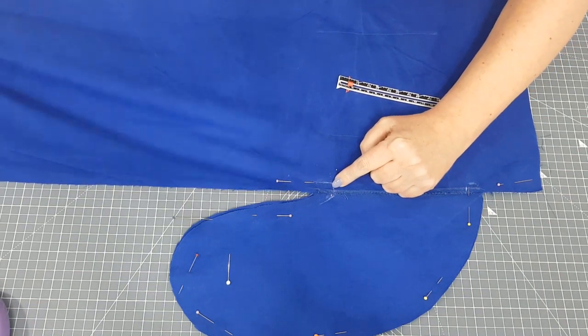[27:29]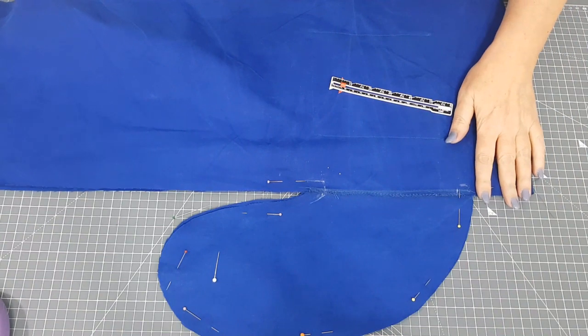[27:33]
But I know that that line there and that line there are the same distance from the edge. So I'm going to come down here to that point, around the pocket, and then across and then down the leg. So that's the outside seam done, and once you've stitched that you can then overlock around that as well.
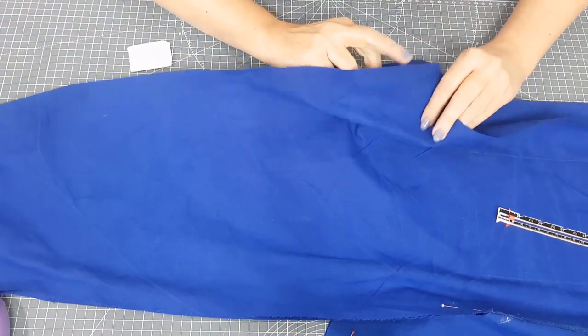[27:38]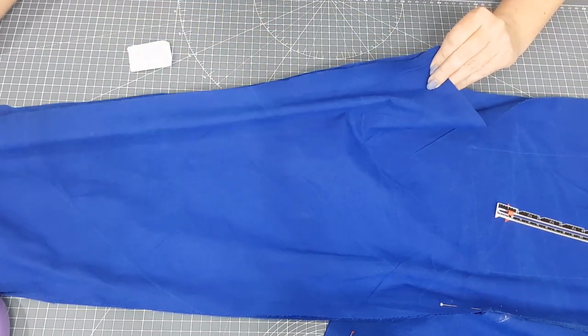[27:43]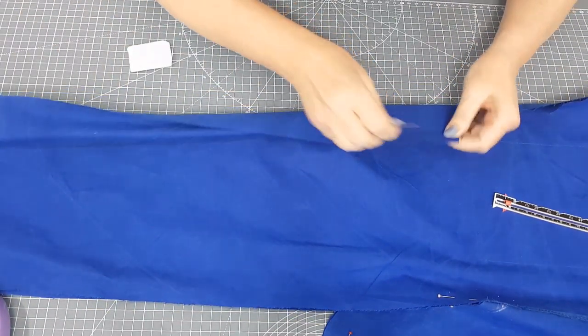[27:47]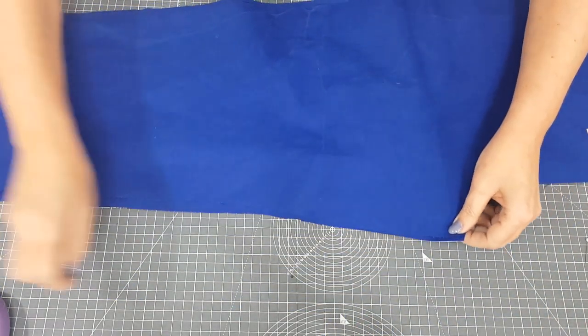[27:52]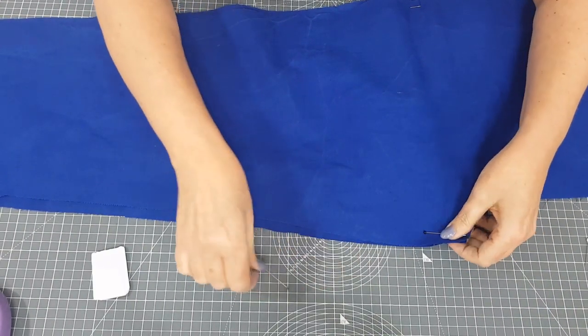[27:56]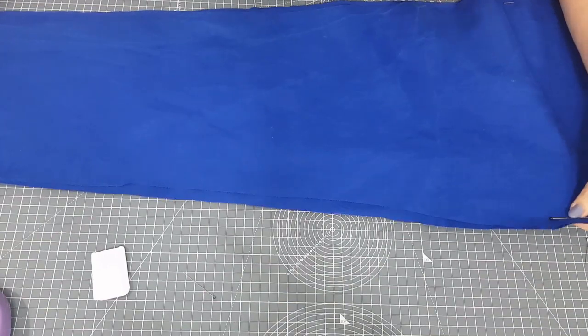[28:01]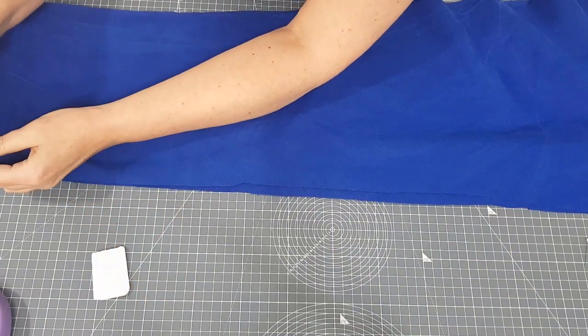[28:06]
And then also the inside leg, so matching up the crotch points here, you're going to pin. I'm going to turn this over because I want to have my raw edges away from me so that I have my pins in the right direction. So from this point here all the way down. What I normally do when I'm stitching is pin the top and pin the bottom here, and then pin in between, and then you know that everything's going to work.
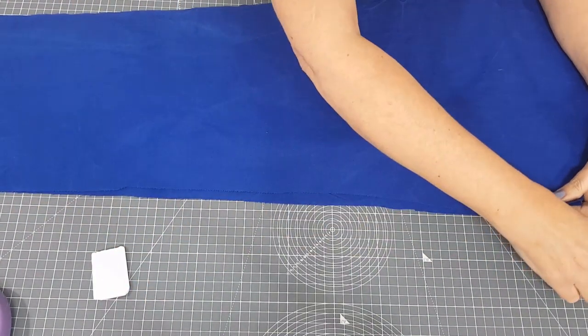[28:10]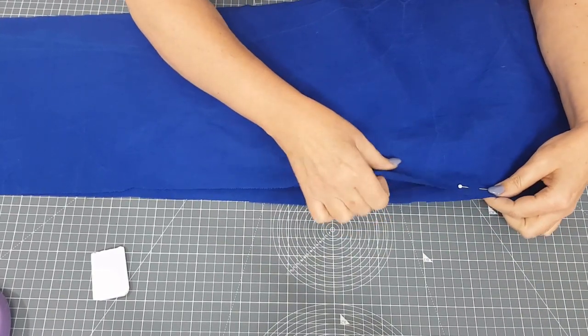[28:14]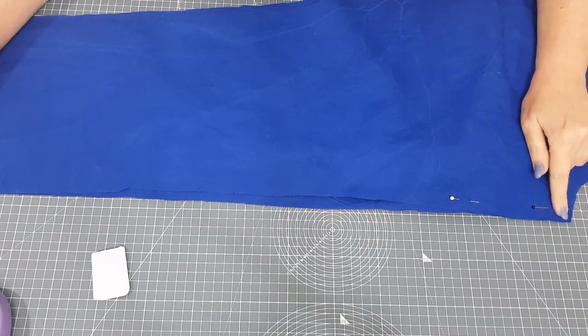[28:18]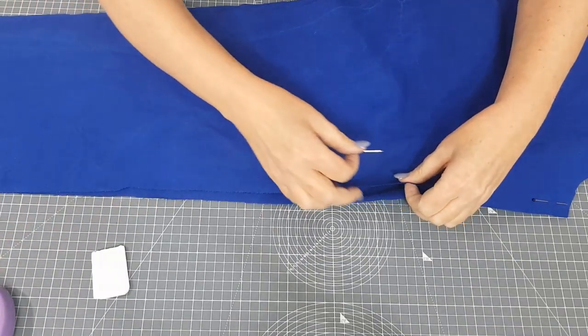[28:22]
So you're going to stitch your outside leg around the pocket and then overlock it, and your inside leg just from the crotch seam to the bottom of the hem, and overlock those as well, and give them a press, and then we'll come back to do the next bit.
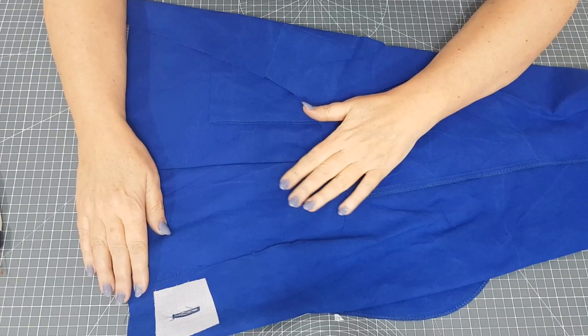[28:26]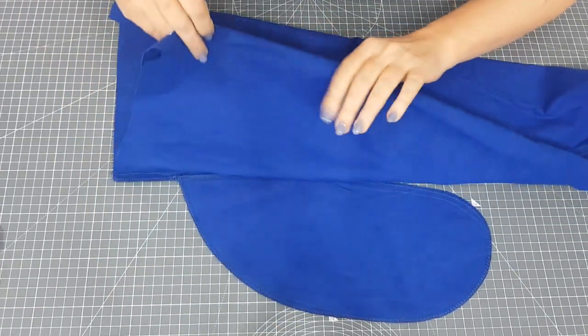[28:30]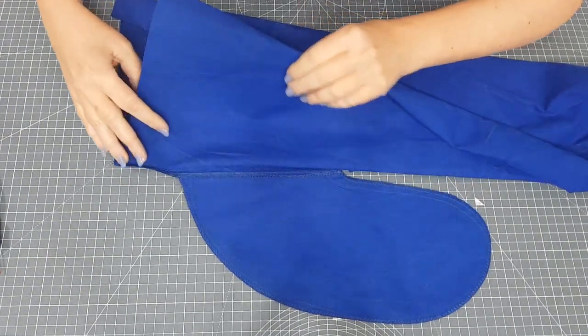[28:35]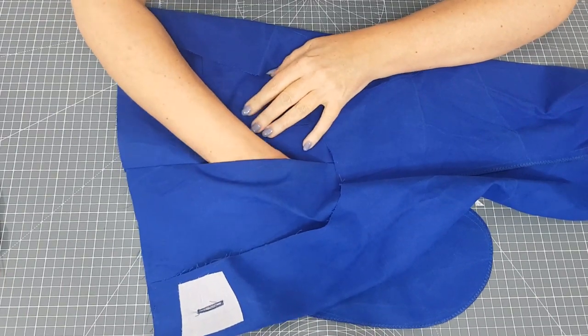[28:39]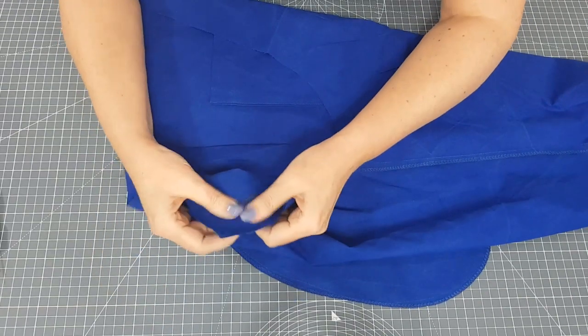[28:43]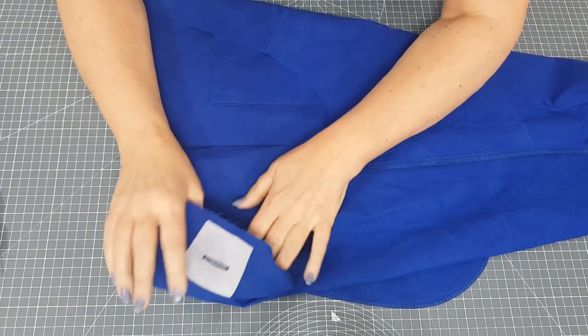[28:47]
So these are pressed. I've done both the seams. Because we've done the side seams together and overlocked them, you'll need to press that side seam towards the front so that the pocket is going the right way. So those are stitched and pressed, and I've also undone the buttonhole as well, so that's all ready for the next step.
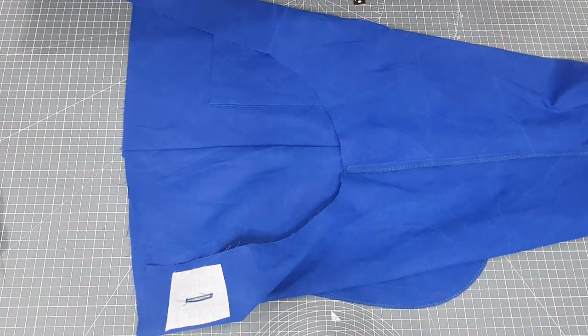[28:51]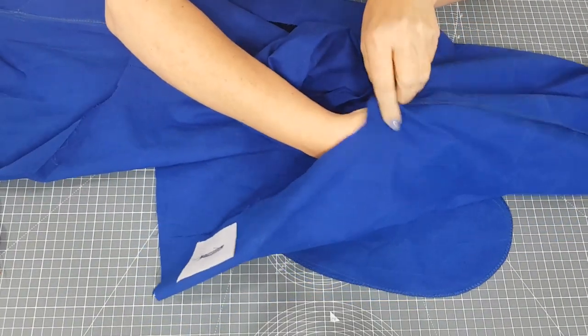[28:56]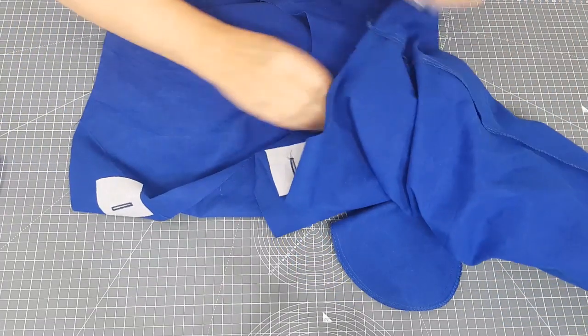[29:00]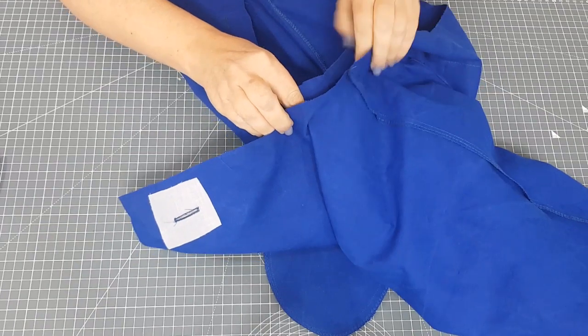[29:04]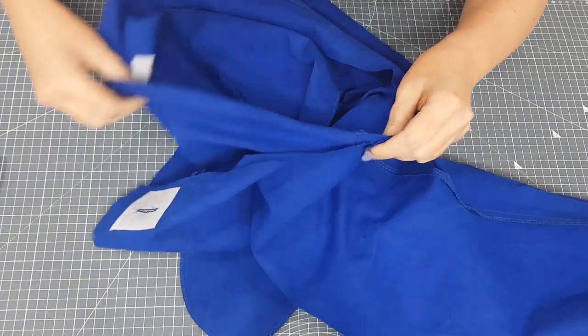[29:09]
So this trouser leg is inside out. I've got the other one here the right way out, and I'm going to put it down inside this one like that, so that I can match up the crotch seams. So match up the inside leg seams here, and then pin all the way up to the front and all the way up to the back,
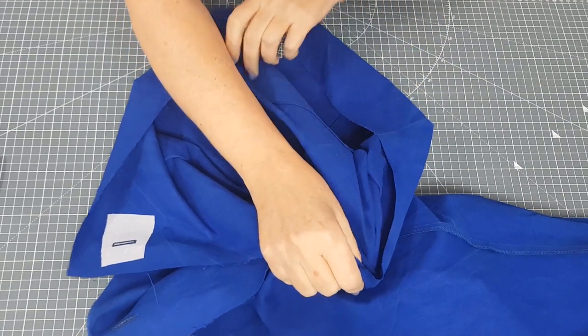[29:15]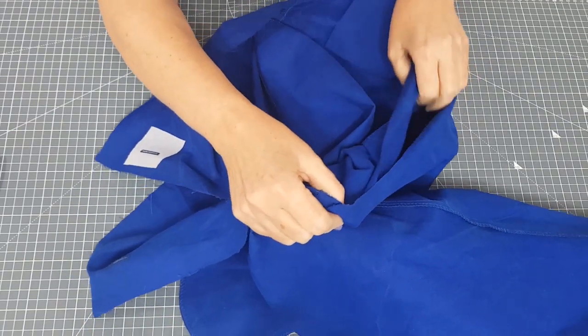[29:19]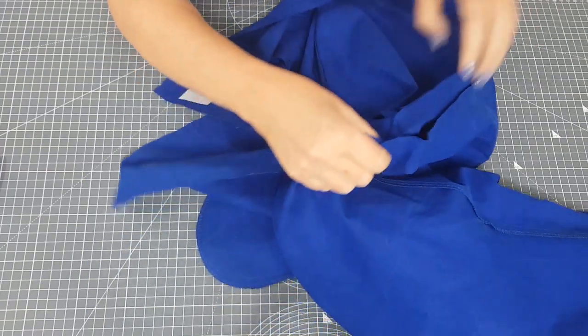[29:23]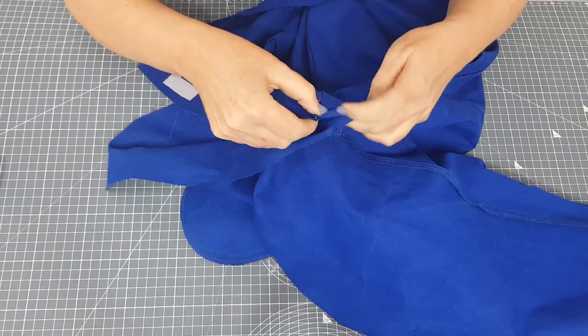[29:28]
and that's the next seam to do. So get that pinned and stitched and overlocked and pressed, all of those things. And then come back to me and we'll talk about finishing off the trousers.
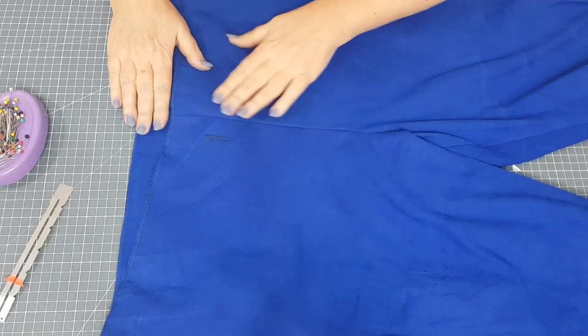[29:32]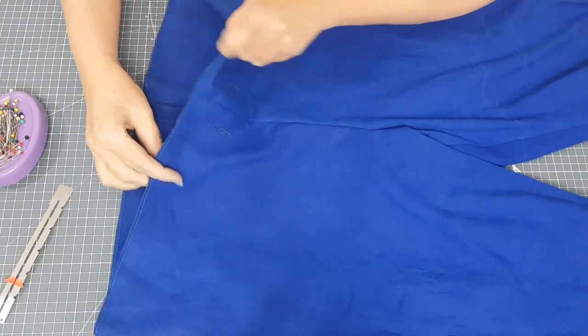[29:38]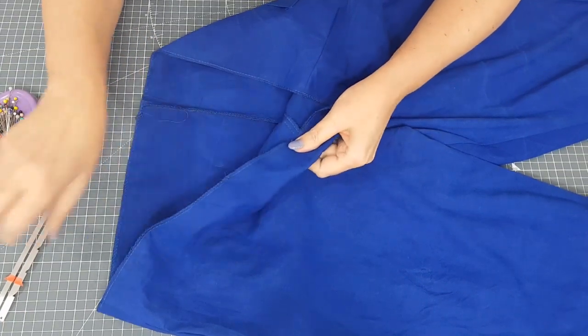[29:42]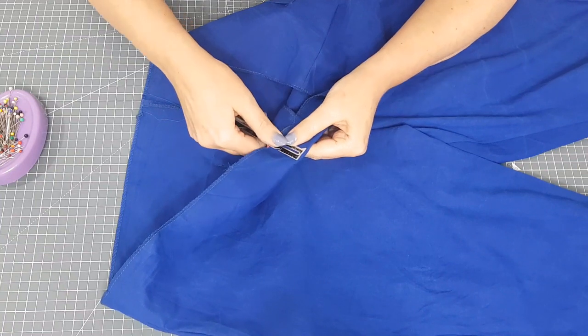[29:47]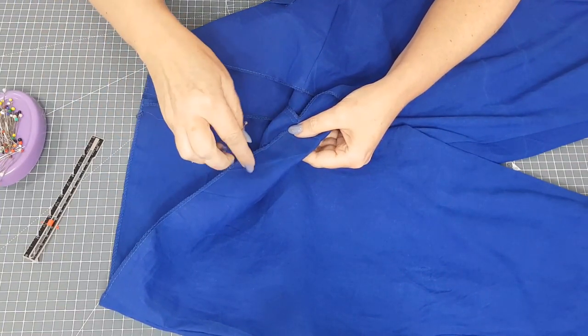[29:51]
Okay, the crotch seams are stitched, the buttonholes are opened here, which is important to do before the next bit we're going to do, which is turning down the top. So I'm going to turn down the top 4 centimetres here, 4 centimetres, and pin that around and then stitch.
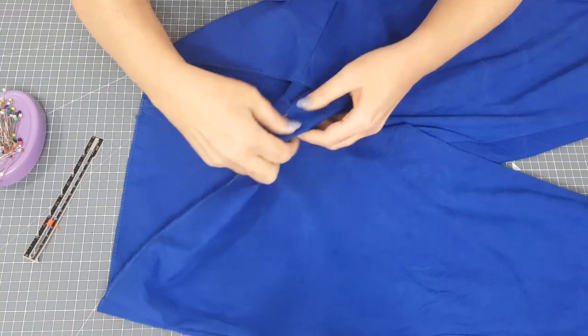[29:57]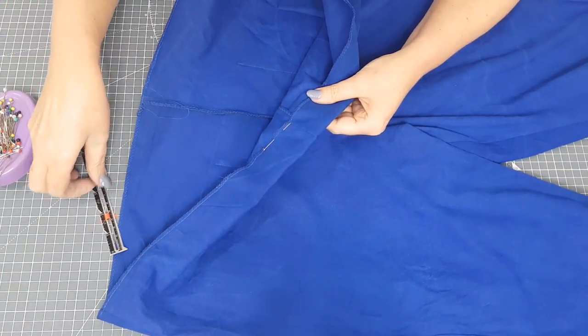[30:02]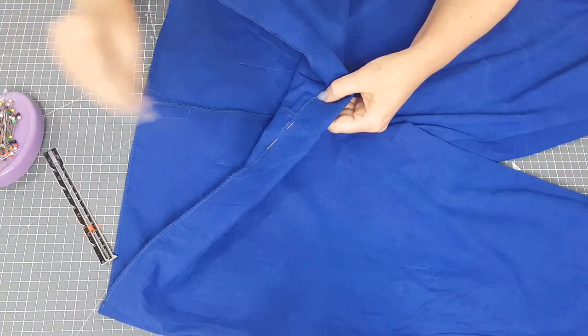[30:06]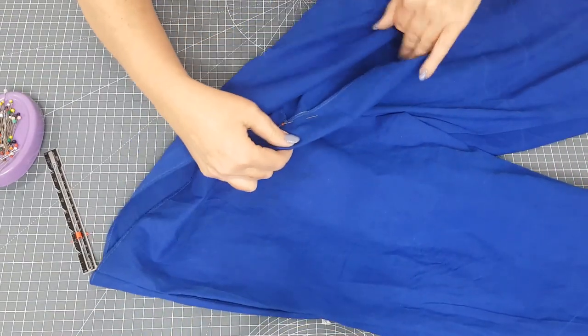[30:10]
So I've neatened this top with the overlocker, by the way, and I've also neatened around the bottom hem as well with the overlocker, so that's all ready to be turned up. So I'm just turning this down 4 centimetres and pinning all the way around, and then I'm going to stitch that, and you can come back to me for the last bits.
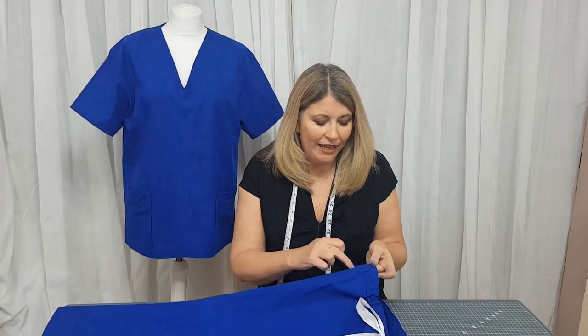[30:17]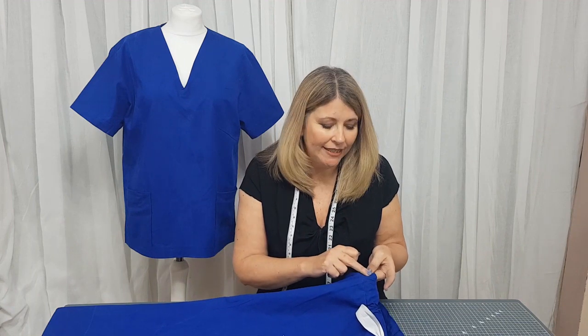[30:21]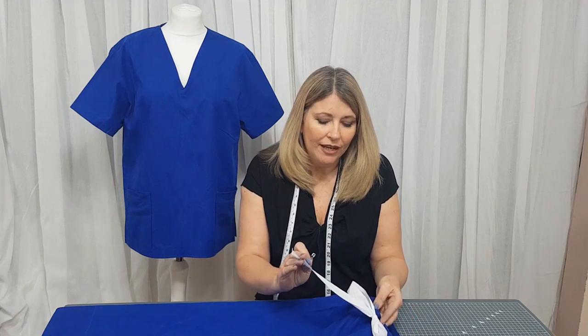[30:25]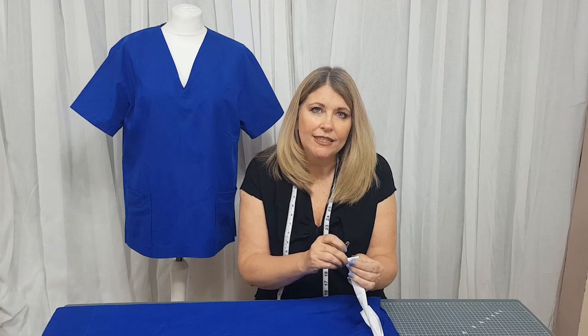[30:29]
So that's our scrub trousers finished. I've stitched around the top here, and I've also done an extra row of stitching close to the edge just to strengthen the casing, and then I've used a safety pin to thread the cotton tape through. I've just cut the cotton tape at an angle here, but if you wanted to, you could turn this over and stitch it. That would also be equally as good.
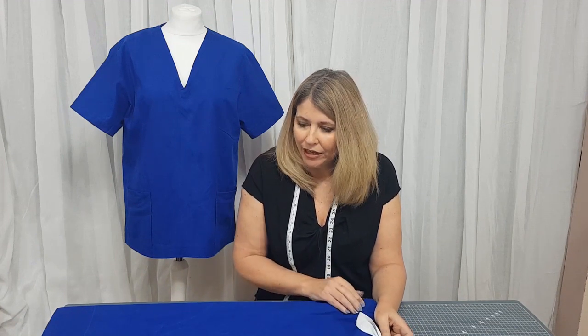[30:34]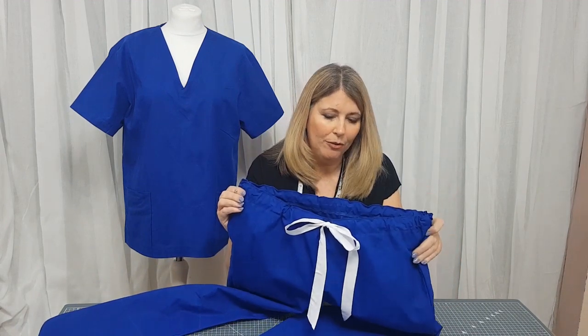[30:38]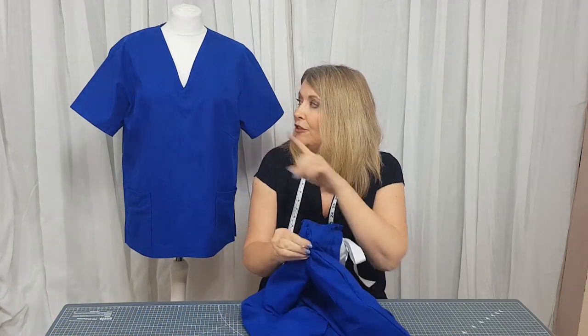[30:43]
And I've done the hems as well on the trousers. So that's the trousers from the front there, and we've got our side pockets, and on the back with the patch pockets, and they'll go perfectly with the top that we've got here.
So I hope you've enjoyed this video. We'll be doing another video of making a scrub bag so the NHS workers can put their uniforms into them at the end of the shift and keeps everything nice and clean.